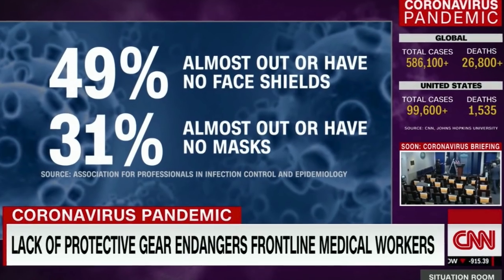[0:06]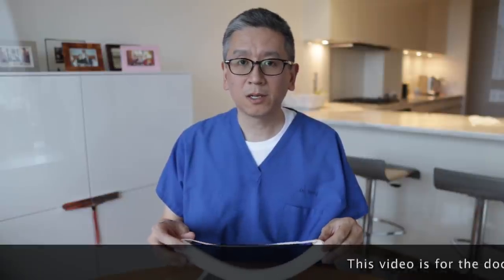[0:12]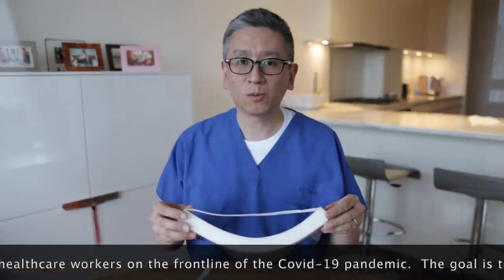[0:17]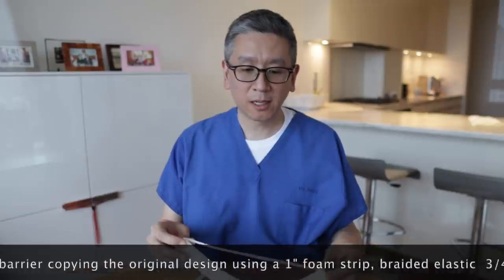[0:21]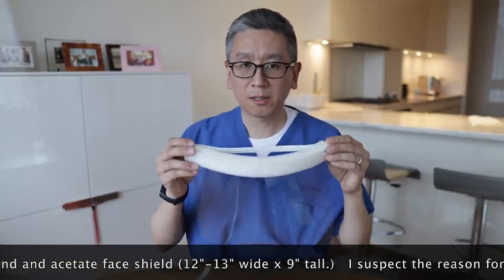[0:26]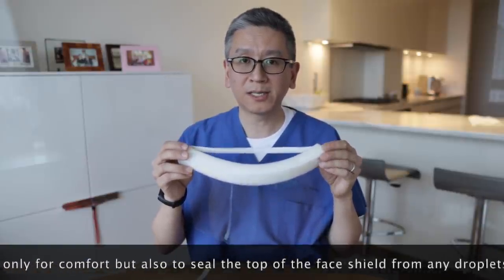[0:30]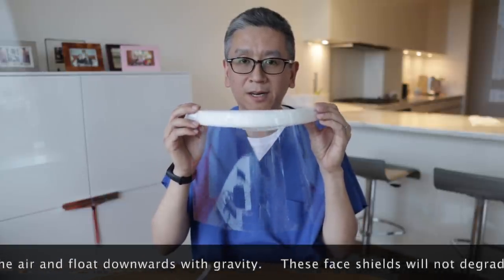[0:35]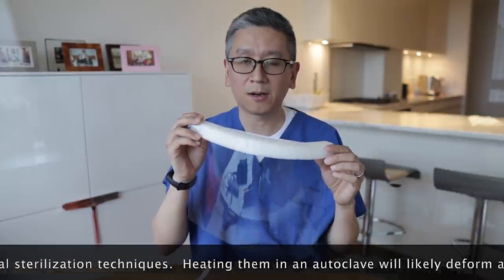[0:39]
This video is for healthcare professionals who are told that their hospital has run out of face shields and they're very worried for their own safety. So, what can you do? The goal is to empower yourself. If the hospital isn't buying the equipment, you can buy very simple materials from an arts and crafts store like Michael's and make this yourself.
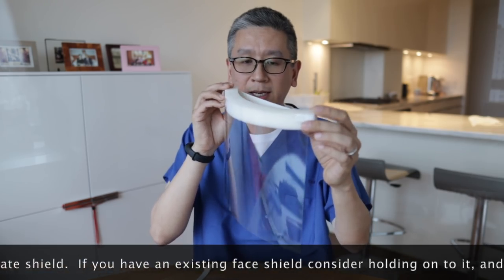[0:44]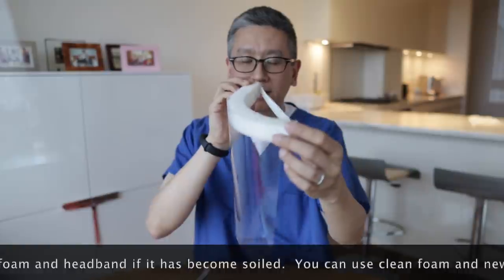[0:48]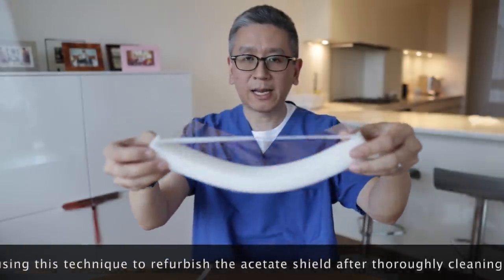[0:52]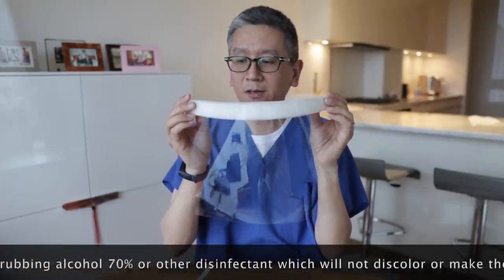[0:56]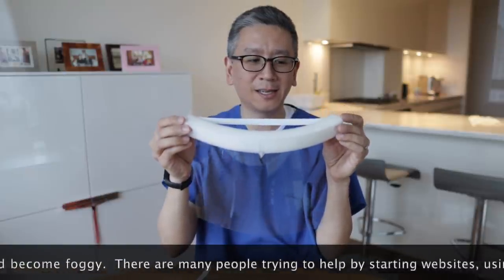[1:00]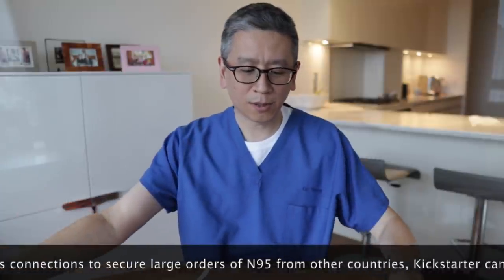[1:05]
Essentially, it is an acetate sheet 9x12, a one-inch foam cushion, and an elastic band. Everyone who's asking for them, you've worn them, you know that it's very easy to make. You look at it, you think, oh, I could make that. So, that's what we're going to do.
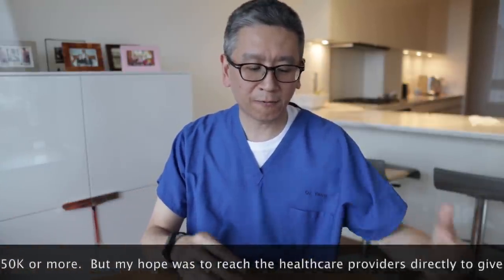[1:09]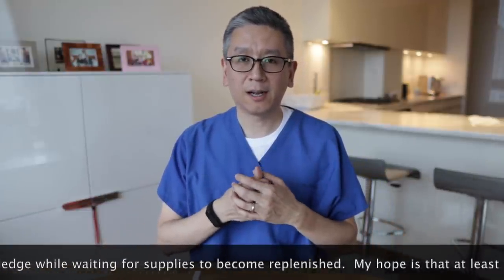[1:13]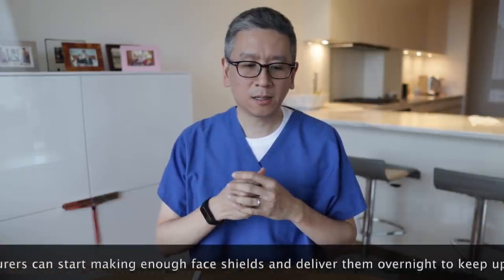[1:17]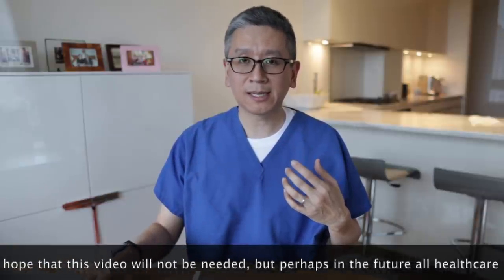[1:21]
So, if we're going to wait for the factories, you know, Ford, Toyota, Nike, to make them and deliver it, there's always a lead time. So, what can you do today, right now?
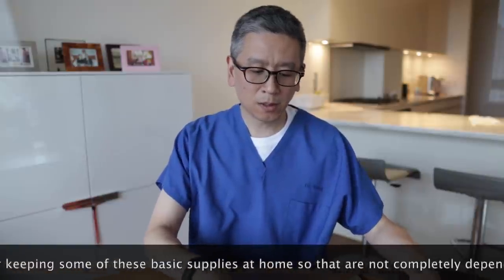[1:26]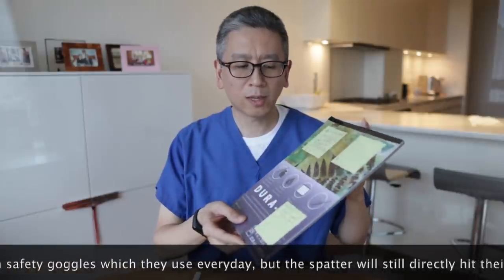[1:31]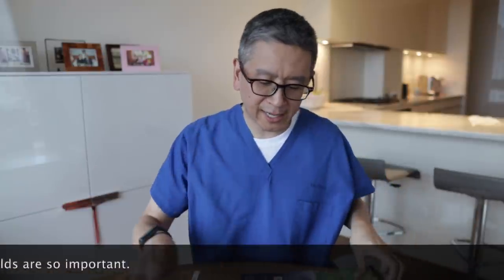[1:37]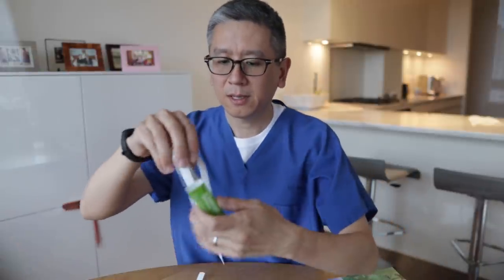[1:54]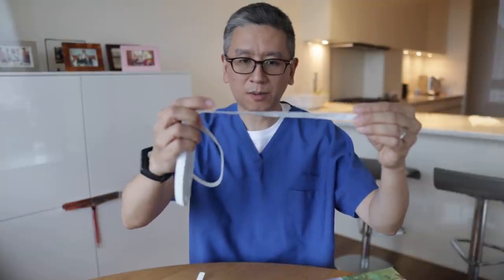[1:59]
So, the number one thing you'll need is the graphics acetate. This is called Duralar. This one comes in a pack of 25. I think it's less than $13. And that will make 25 shields. I have a roll of braided elastic, and you can make approximately 11 out of this one. This is four and a half yards long. Four yards will get you 10 elastic bands.
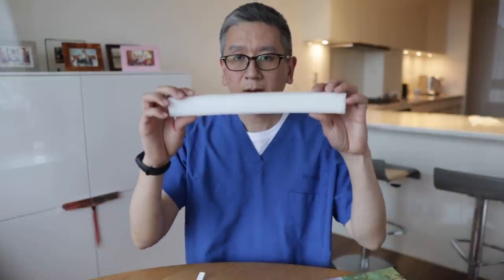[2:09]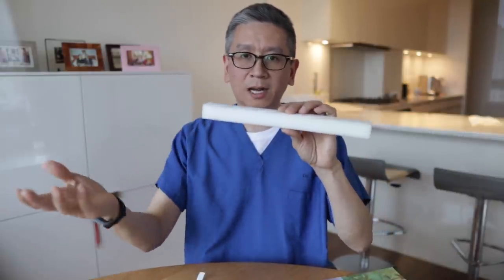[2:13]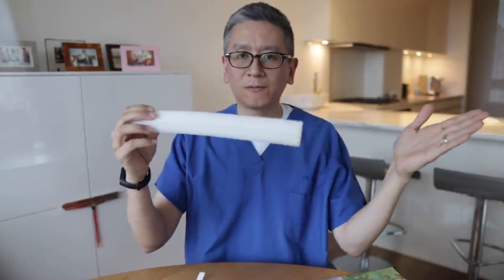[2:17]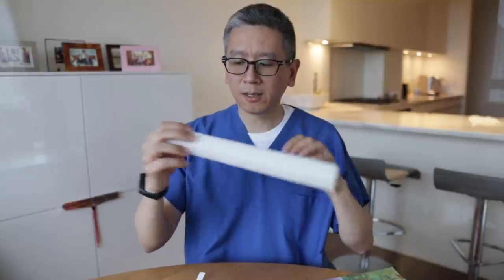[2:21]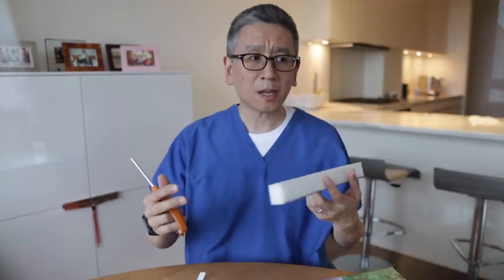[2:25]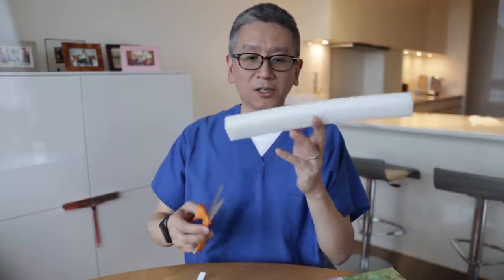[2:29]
Foam cushion. This is one inch thick. It comes in a giant roll at Michael's that is two feet wide by six feet long. If someone bought a giant roll of foam, I would just cut a strip. It may not look as pretty as this one, but it'll do. Okay. So, let's say it's cut.
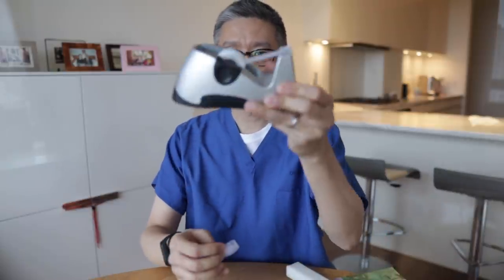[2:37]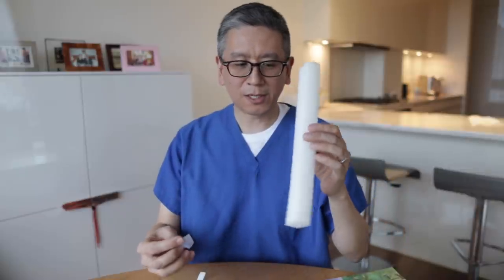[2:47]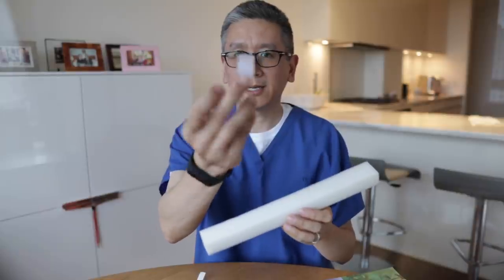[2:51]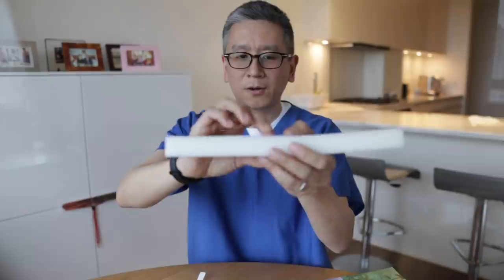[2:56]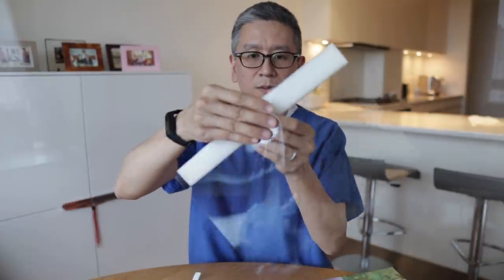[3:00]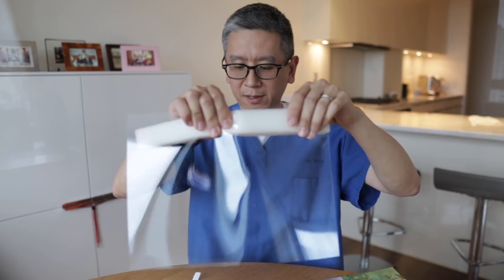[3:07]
Next, we're going to use plain scotch tape. Let's say you go to the nursing station, you grab a scotch tape, you're going to grab a stapler. You know, we're talking emergent or urgent situation. We're going to roll the tape onto itself. I'm sure you've done this before. Stick it onto the foam and just line it up to the top edge. Okay. We're essentially making an umbrella for our face. Okay. A splash shield.
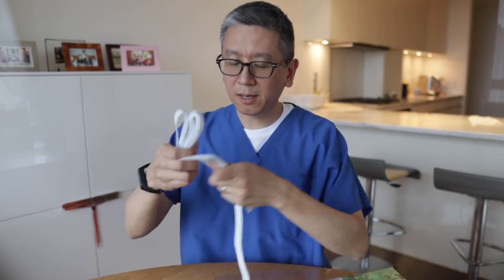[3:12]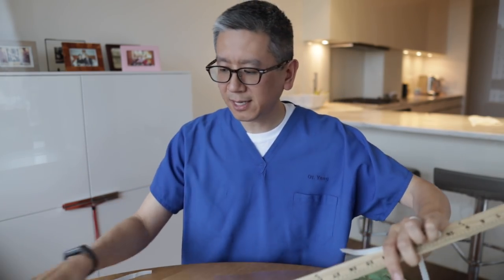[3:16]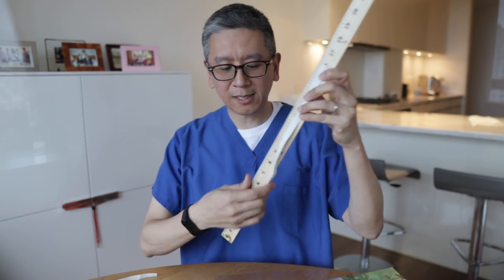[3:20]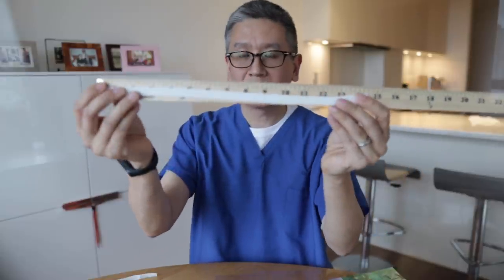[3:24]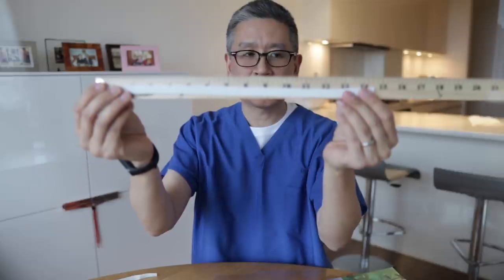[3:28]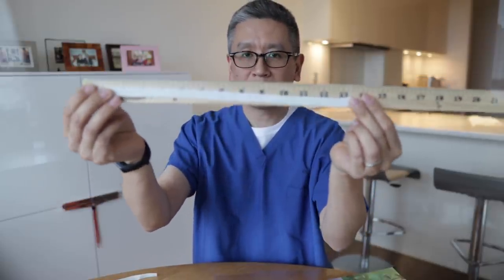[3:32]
Next, I'm going to pull out about 14 and a half inches of elastic and cut it. Again, these type of scissors at the nursing station. 14 and a half inches. That's approximately a large head. That's comfortable for me. A medium is probably 14 and a small is maybe 13 and a half.
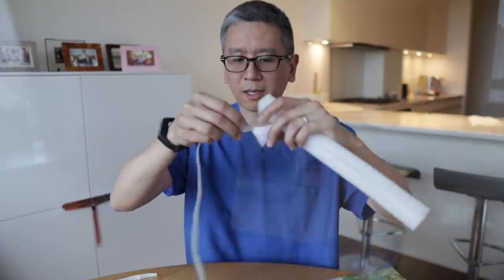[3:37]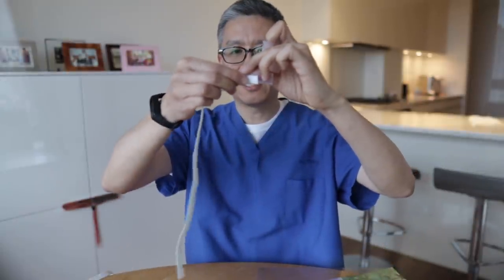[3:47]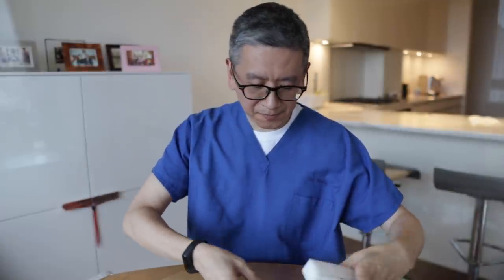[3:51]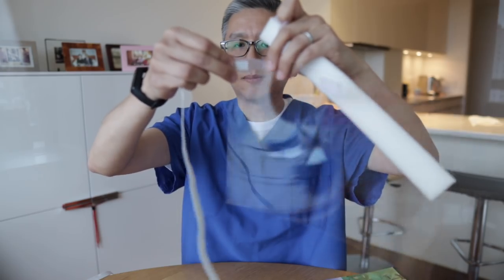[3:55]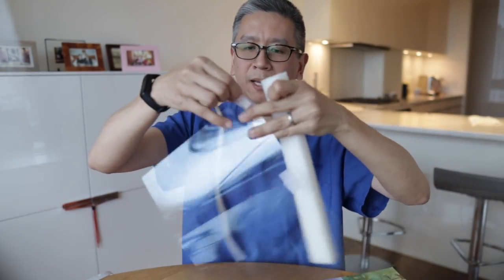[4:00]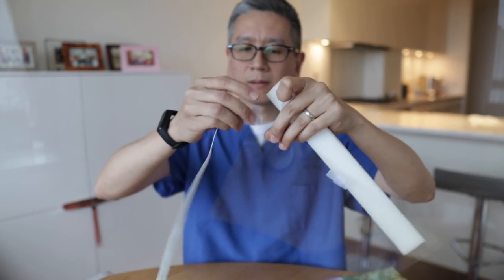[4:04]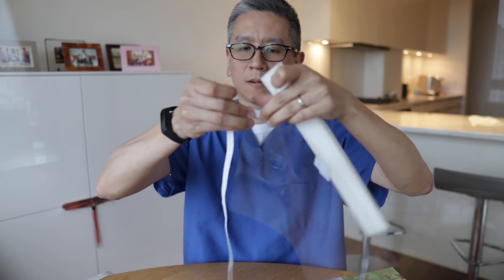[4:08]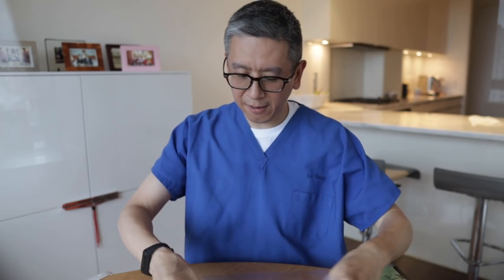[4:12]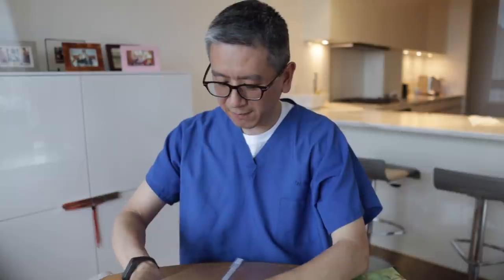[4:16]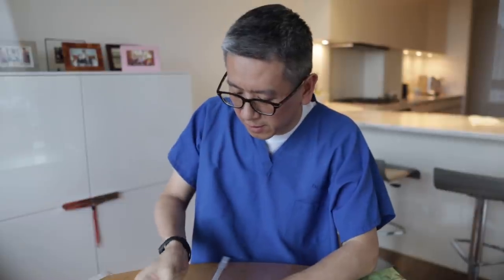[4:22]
Next, we're going to line this up right here. What I'm going to do to make it easier, I found that the stapling is a little bit tricky. So to make it a little bit easier so you're not fumbling, you're going to tape that on the front edge and then just line it up and tape it. We're going to staple it so it's more secure, but this is just to make the stapling a little bit easier. Okay. You're going to tape that on. Let's say if you can't find a stapler, this might have to do. Okay. But the stapler is much more secure.
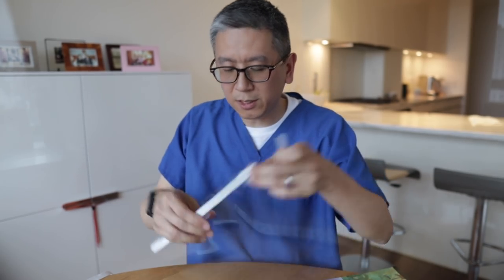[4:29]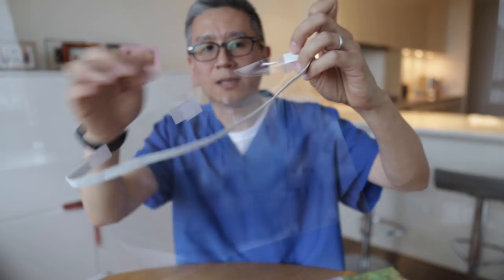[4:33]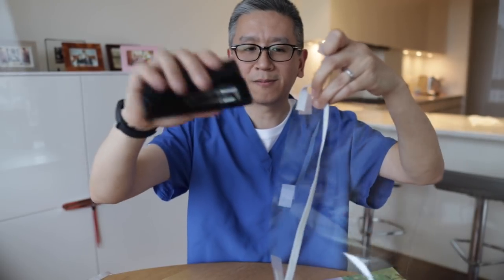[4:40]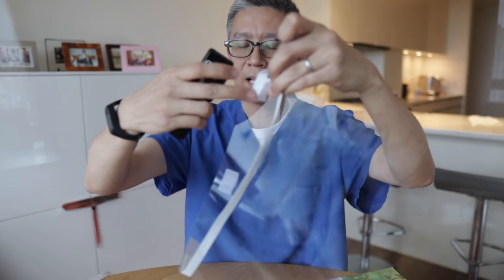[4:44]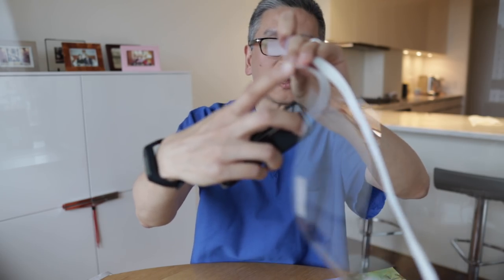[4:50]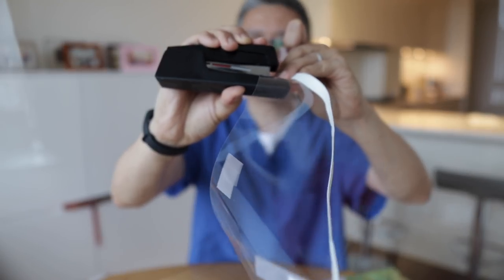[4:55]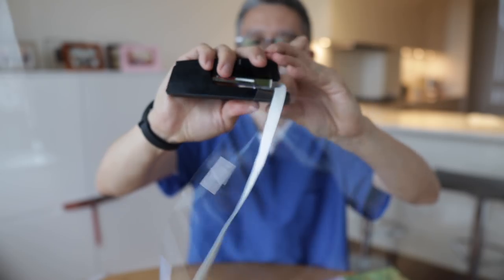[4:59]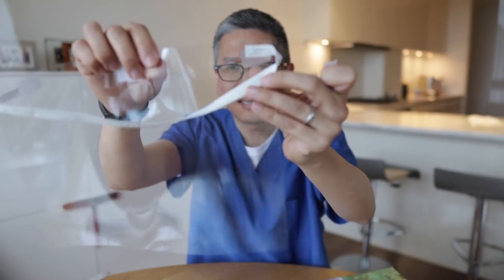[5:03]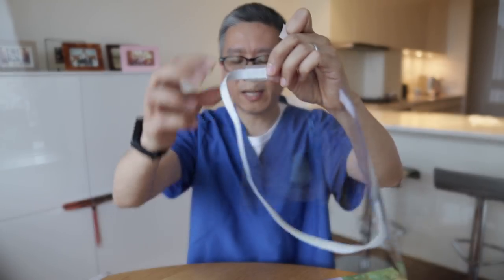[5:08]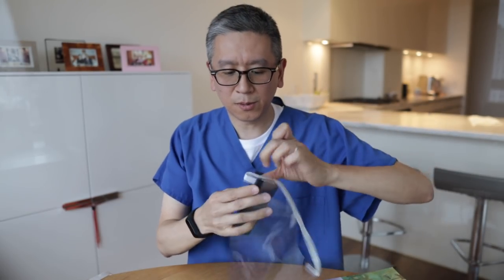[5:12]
So we're just going to place the tape here. I'm actually pulling off the foam so I can show you guys. So I've taped the elastic on the edge and that's really just so you can line up the staple. Actually, I'm going to use the stapler. You recognize this. So the staple is going to go on the outside of the shield and then the elastic is on the bottom and the acetate is on top. I'm going to put two staples. So hopefully you can see there's two staples here. The tape holds it in place while you line it up, otherwise it's a little bit tricky to staple. I'll just line it up.
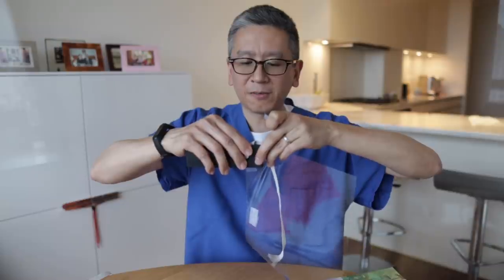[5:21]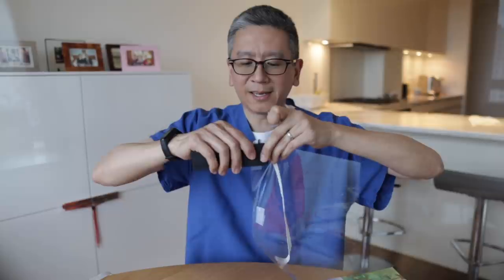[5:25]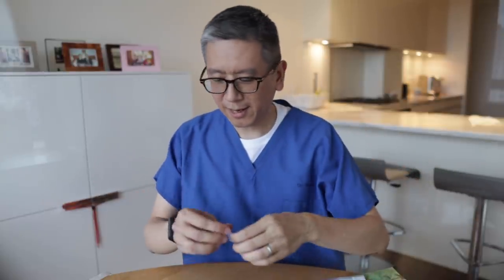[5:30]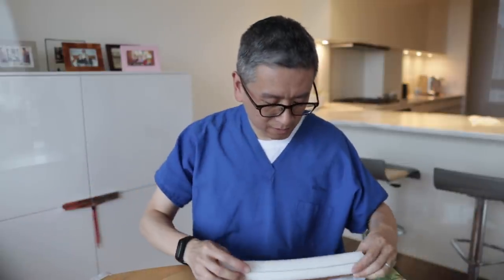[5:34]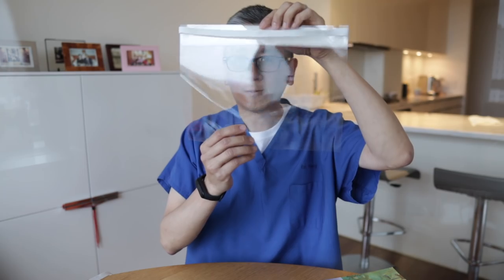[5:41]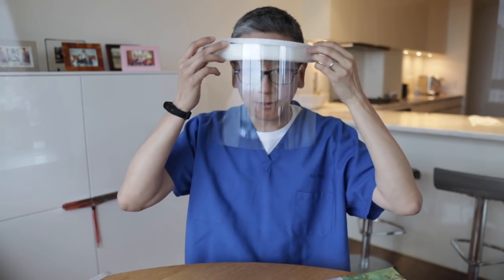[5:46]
I see they're doing 3D printed masks. If you've ever seen a 3D printer churn out its design, it can take literally like 10 minutes up to half an hour to print out whatever it's printing. They also are using laser cutters to cut these shields. But if it's a rectangle, you don't need anything special. Literally, you can use a pair of scissors and then you're done and you can start taking care of patients.
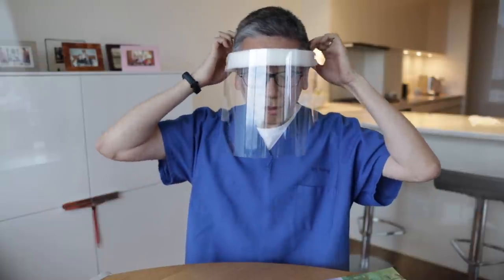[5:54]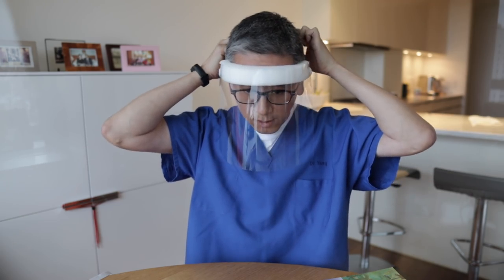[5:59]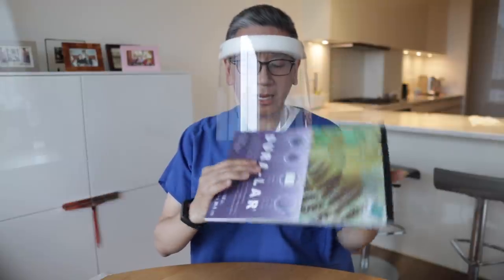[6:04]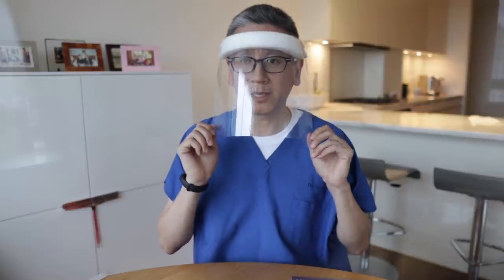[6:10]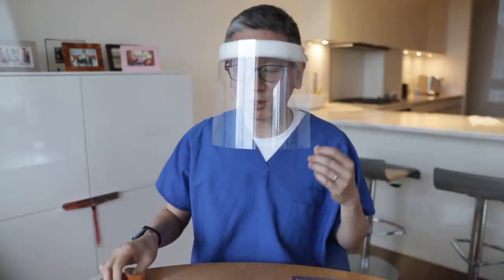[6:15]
On your next shift, you can make a fresh one and discard it depending on how confident you are about buying these supplies from your local shops. But other little details is you can maybe round off the edges with your scissors so it looks more like the standard shield. When you're seeing patients with this shield, it looks pretty much like what you normally have. So they may not notice that it isn't the standard shield. And it'll protect your face from getting any mucus or body fluid or blood.
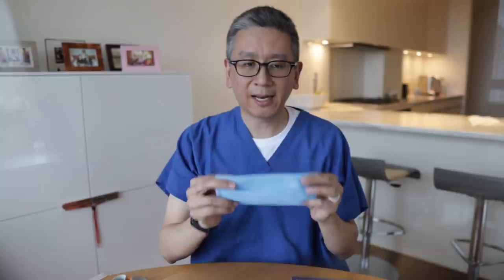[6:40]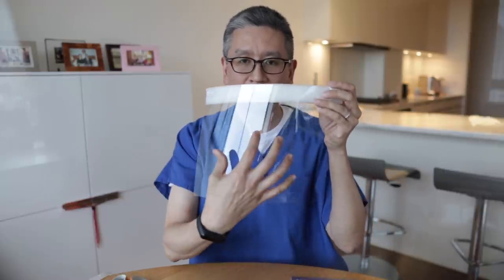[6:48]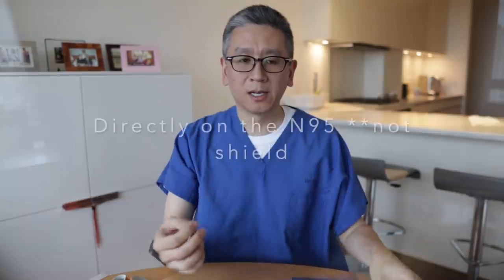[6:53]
The other reason for making it is if you have, let's say, an N95 mask. The two reasons why the masks become unusable is a direct spatter of blood or sputum or mucus directly on the shield and it's visibly contaminated. That you should throw out. The other reason is over time the filtration ability of the mask gets clogged with maybe microscopic or visible droplets which you can't see but contains a little bit of mucus. Then over time it starts clogging the filter material of the N95 and it makes it very, very difficult for the user to breathe.
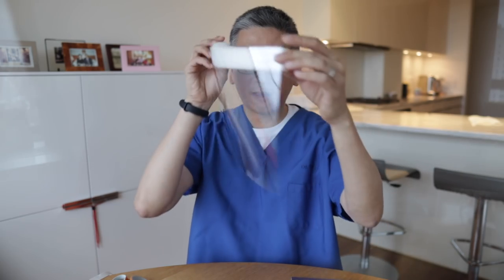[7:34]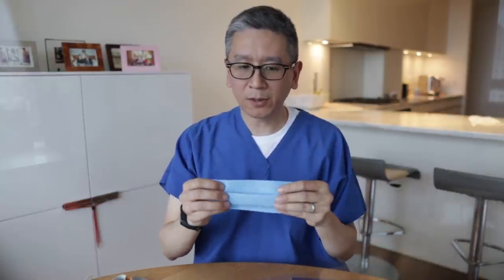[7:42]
And that would also be a reason for, you know, it's filtering well yet you can't breathe and therefore you can't use it. Having a physical barrier like an umbrella will at least block that initial splash. At our hospital the other thing they're doing is recommending that they use a procedural mask on top of their N95 in order to preserve the N95 so it can last longer.
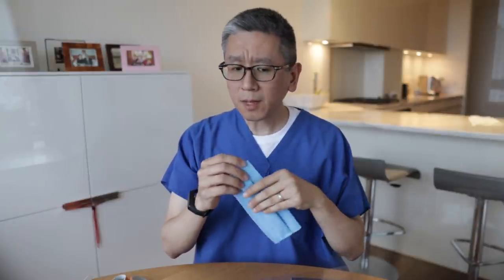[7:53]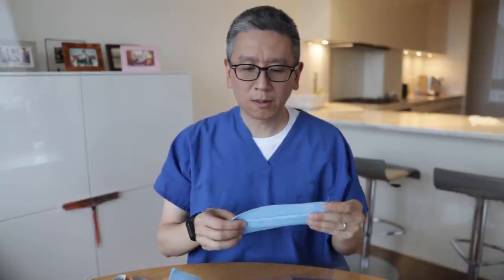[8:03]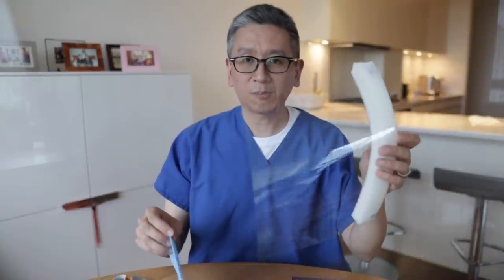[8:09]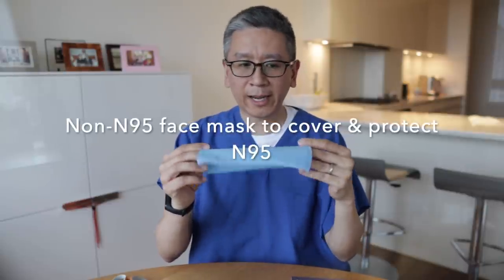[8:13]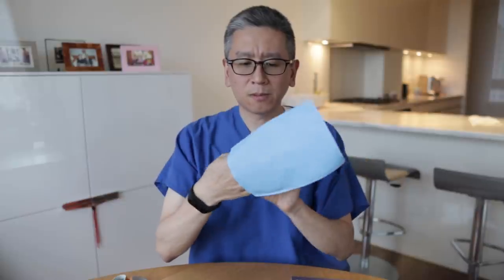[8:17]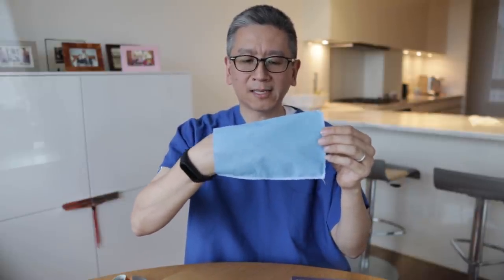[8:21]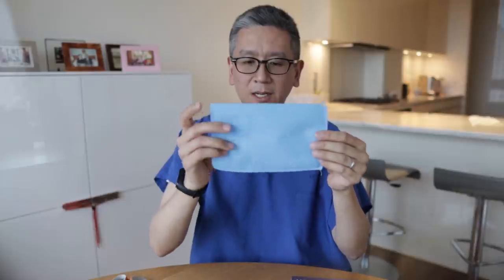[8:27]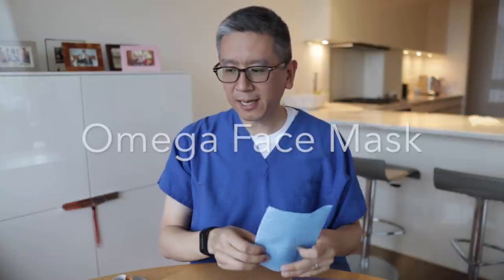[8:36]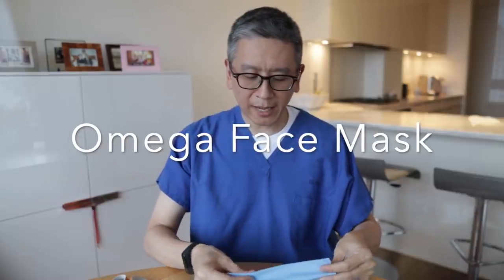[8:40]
So one other thing I wanted to show, this is a way to make a procedural mask and maybe even save some of the other ones. So this is really, instead of a splash shield or a face shield, this is your N95 shield. What I have here is a cold pack sleeve. At our office we place a cold pack in and we give it to the patient. What I did is I modified this to become a makeshift face mask and I call this design the Omega face shield or the Omega face mask.
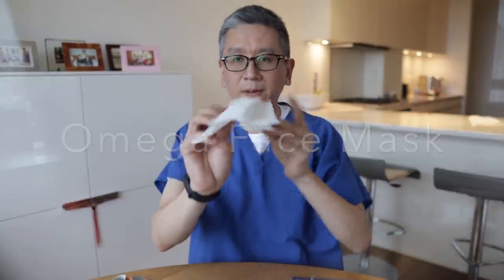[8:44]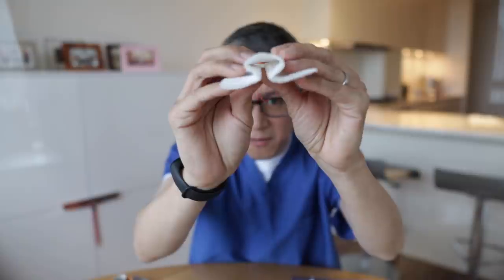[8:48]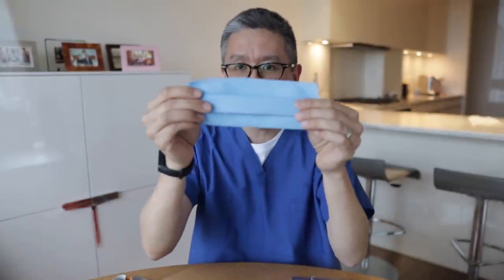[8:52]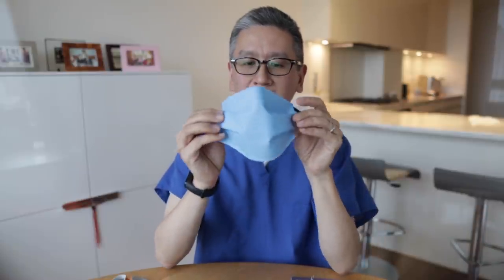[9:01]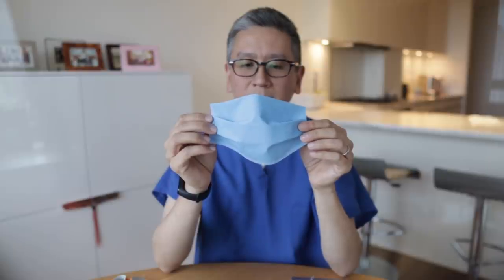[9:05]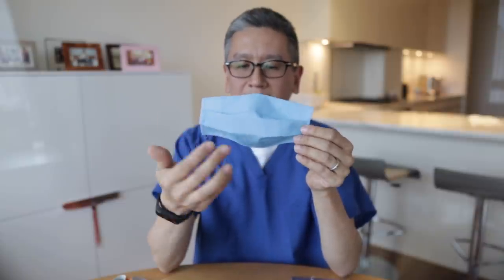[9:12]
The reason is when it is folded up, if you look at it right here, it forms the Omega sign. Okay, and the way it looks is like this and then when you put it on, it covers the N95 mask. This is used in surgery as a drape material. In this case, this is a cold pack cover and it is waterproof.
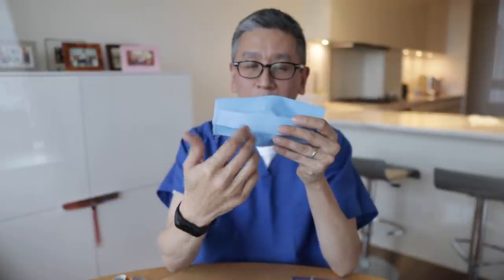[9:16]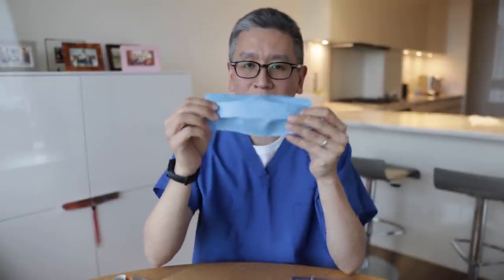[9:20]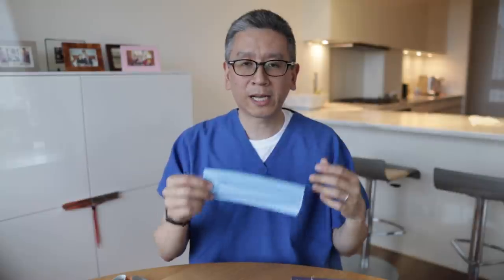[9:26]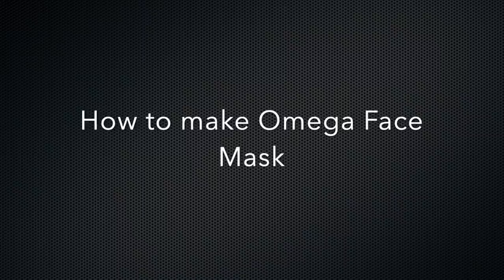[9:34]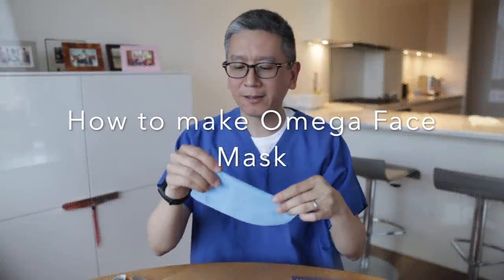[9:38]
So this way, it doesn't soak through like a paper towel and literally, if you have enough of these, you can discard them maybe between patients or, you have a morning shift, you throw this one out because it's not even a real mask and then make a second one for the afternoon. So now we're going to make the Omega face mask.
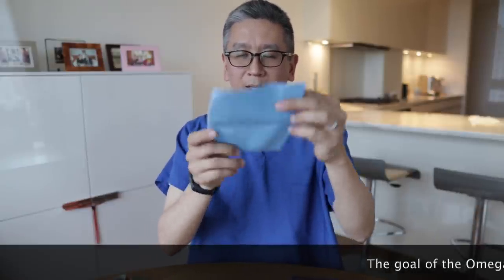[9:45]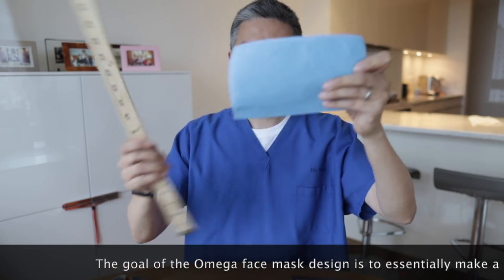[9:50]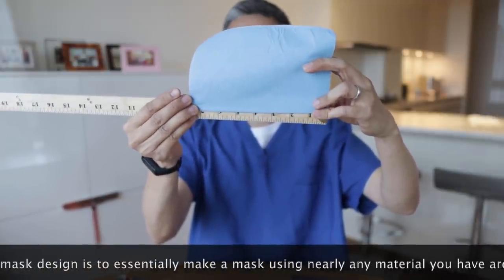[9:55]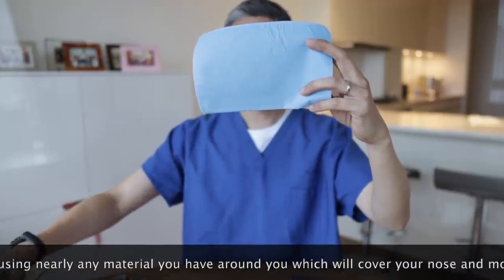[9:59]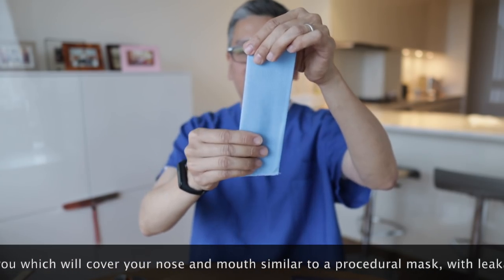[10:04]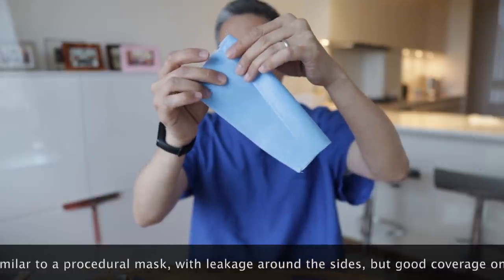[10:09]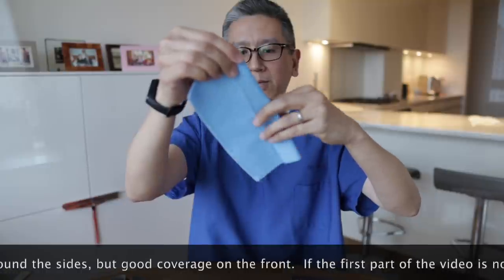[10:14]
So the way that I designed it, I'm going to give you a measurement. This is approximately seven and a half inches long and about five inches wide. To make it, you're going to fold it in half lightly and then from the fold, you're going to fold the front half to meet the middle, that slight middle fold, and then a second fold right here.
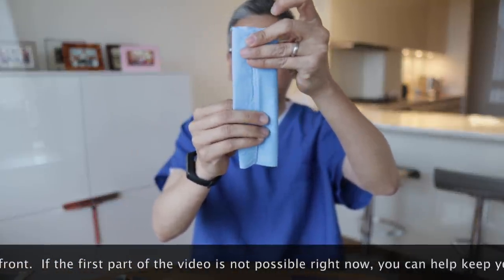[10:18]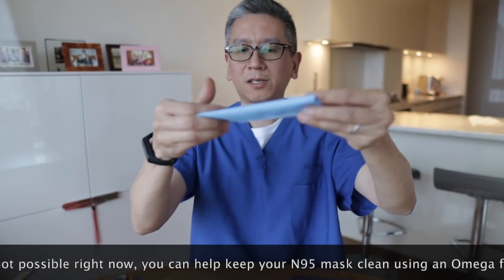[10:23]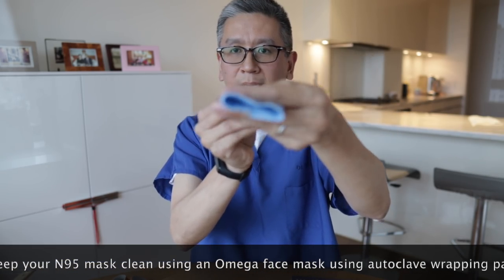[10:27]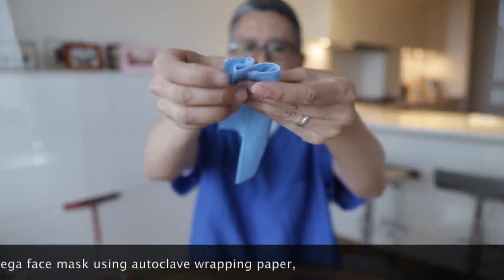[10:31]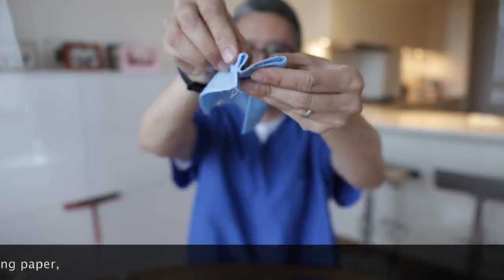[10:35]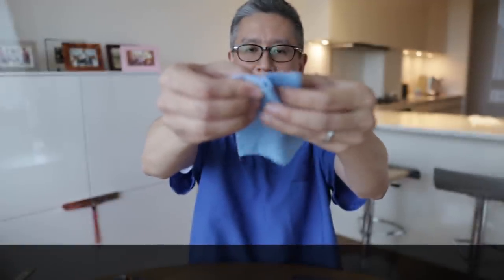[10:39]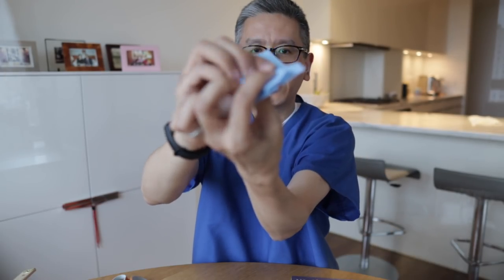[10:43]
So this is the Omega face mask. Once you do that, this is the shape. You're going to then fold this over to meet the middle. So you're going to take this, then fold it over and then take this other side and fold it over. And this kind of gives that Omega shape.
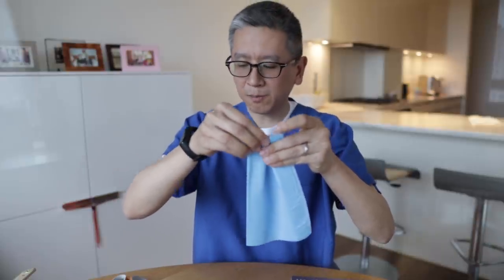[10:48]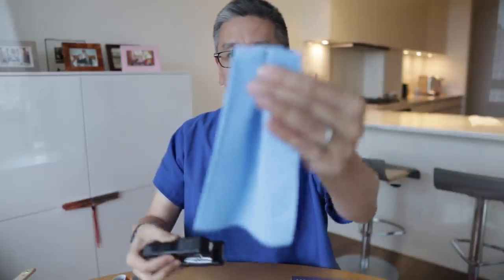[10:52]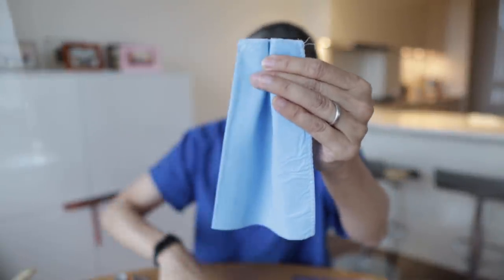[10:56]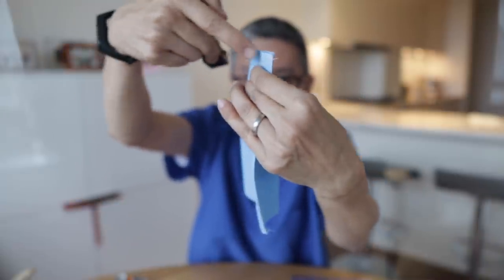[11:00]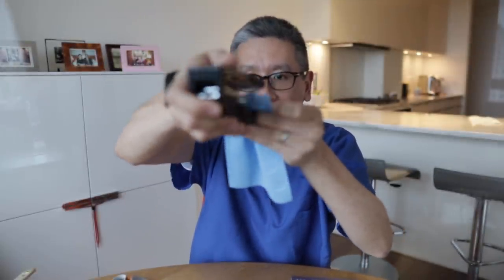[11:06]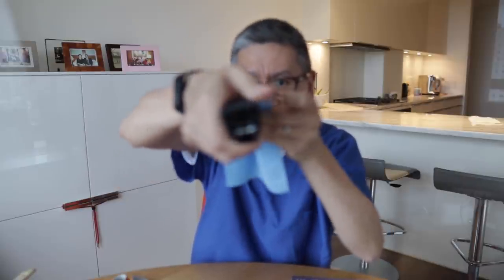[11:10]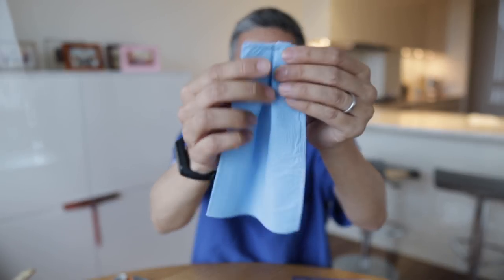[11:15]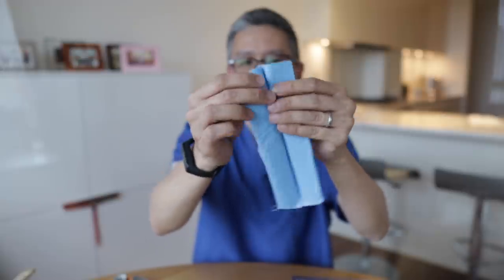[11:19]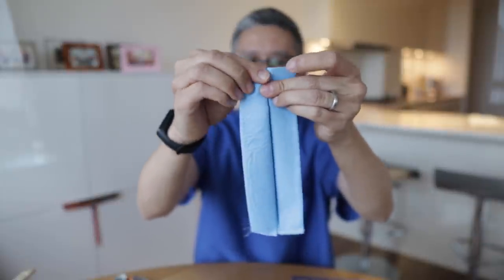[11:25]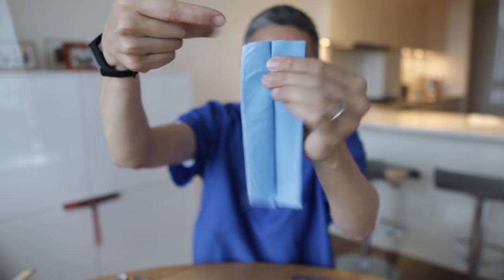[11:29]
Next, we're going to use a simple staple again, using stationery supplies, right where I'm going to block my face, right where the seam is. We're going to place a staple from front where the seam is to back. You want the sharp side of the staple facing the outside of your mask, so you don't get scratched by the staple. So I just placed the staple right here. I'm going to finish the Omega fold right down the other side. Like this. We're going to staple the open end with the staples coming in this way to the open end.
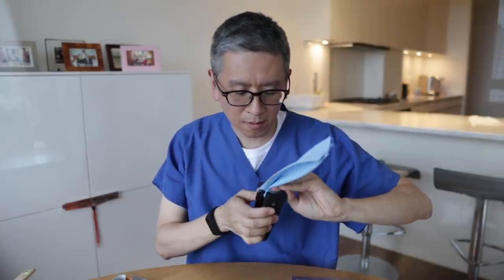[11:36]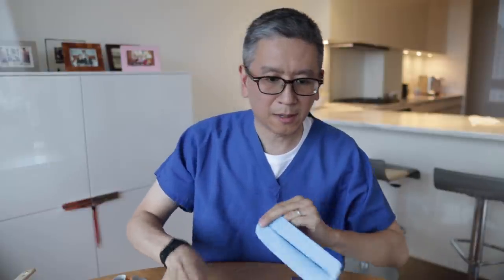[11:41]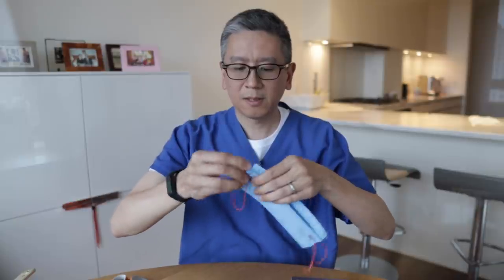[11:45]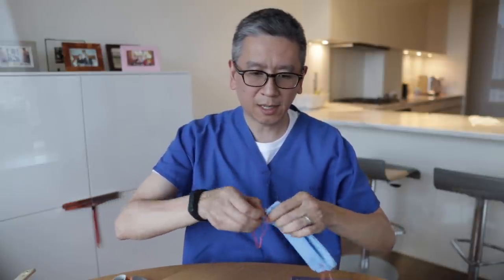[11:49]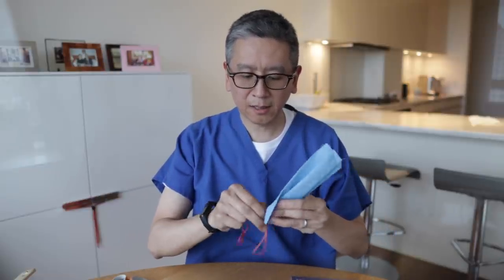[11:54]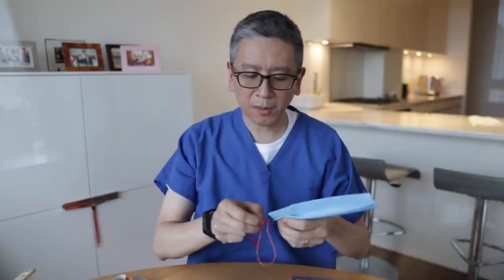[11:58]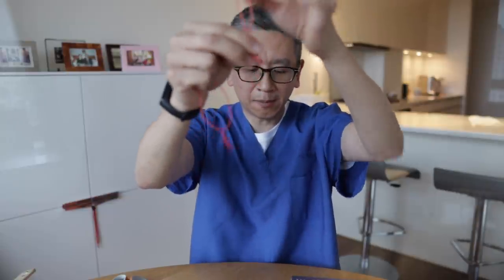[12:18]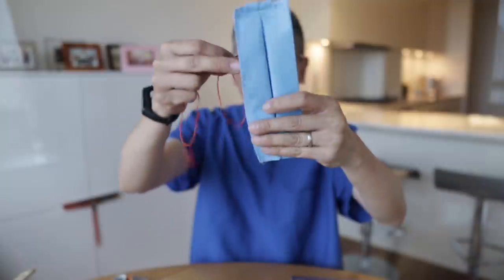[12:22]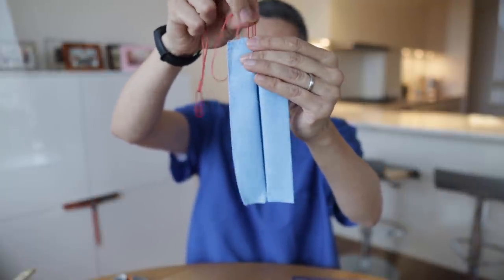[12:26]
So next, what you'll need is paper clips and a stationery rubber band or some kind of rubber band. These are the big loop kind that sometimes they'll wrap eight and a half by 11 documents in folders. So these are pretty common for the secretaries. If it's any smaller, you can't really wrap a stack of documents. A standard paper clip. And then here we go. So we have our Omega shield. We're going to place the paper clip and this is just to cover the N95. It's literally an N95 shield.
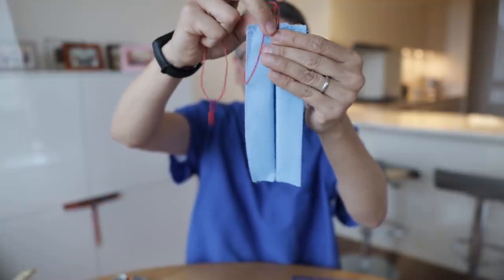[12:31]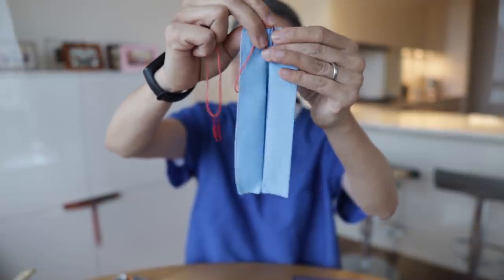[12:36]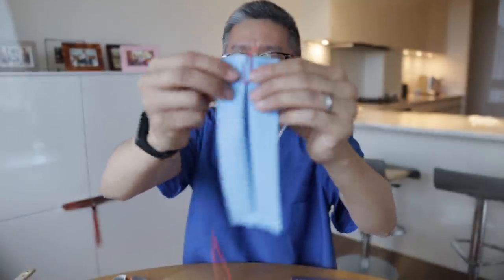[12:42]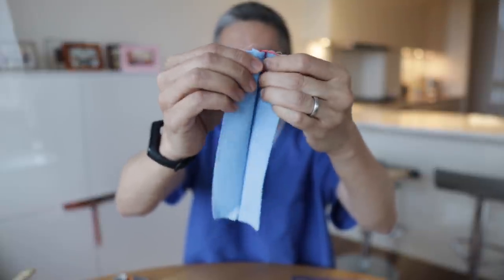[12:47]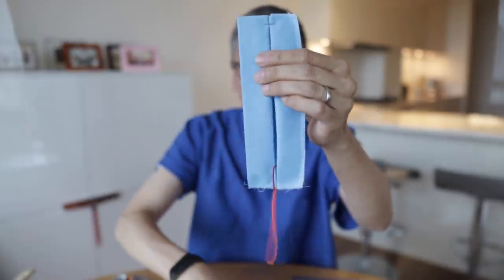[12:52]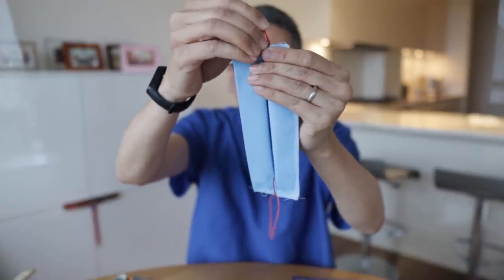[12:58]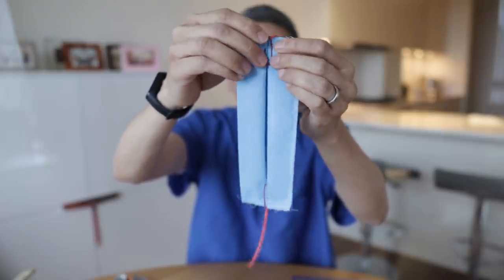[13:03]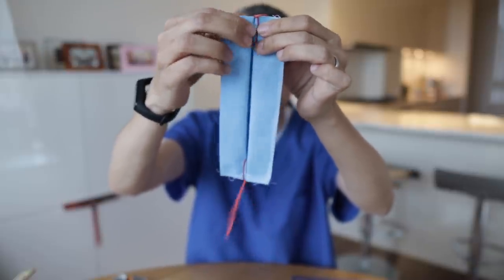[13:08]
So that on top, underneath the face shield, we're going to slide this down. You're going to slide the paper clip down. Notice the edge of the big loop here is on top. To make it more secure, you're going to pull this flap and then tuck it. So you only see half of it. Same thing on this side. We're going to slide this over the top. And then push it down. You'll see the big loop. We're going to pull one side of the flap, tuck it underneath. You only see half of it.
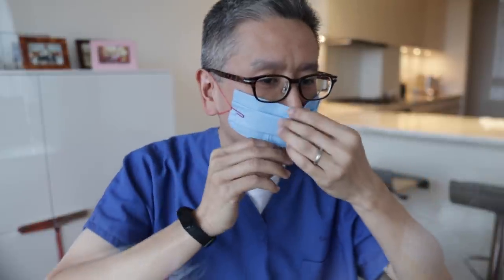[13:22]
We're almost done. I'm going to pull this up a little closer so you can see me. I'll sit a little closer. Just pull the Omega shield over your ears like this. Loop it on. You'll be wearing your N95 already and just pull it up like this. It creates a little tent in the center.
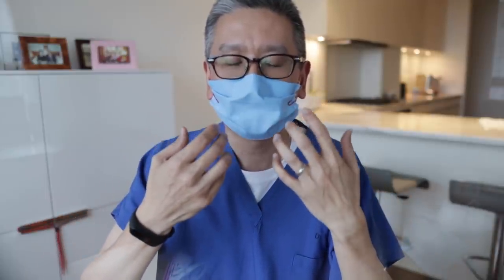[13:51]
There's some leakage, but the main thing is we're using this as another shield with your face shield. Then you have a secondary shield. If there's an aerosol, most of it hits the shield, which you can wipe off. Let's say some venturi effect comes around the shield. You have a second shield to catch any light droplets.
And then because it's so simple to make, you can discard them more frequently.
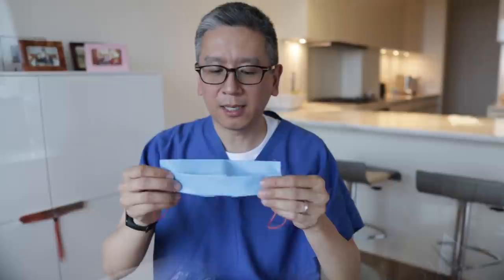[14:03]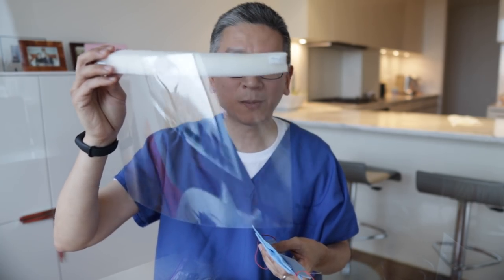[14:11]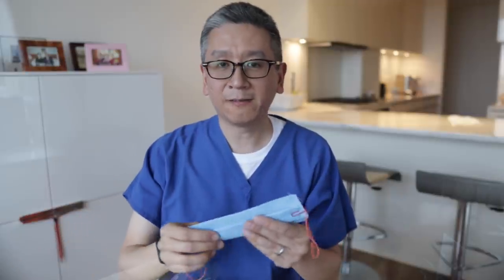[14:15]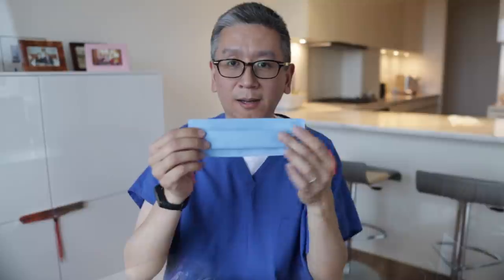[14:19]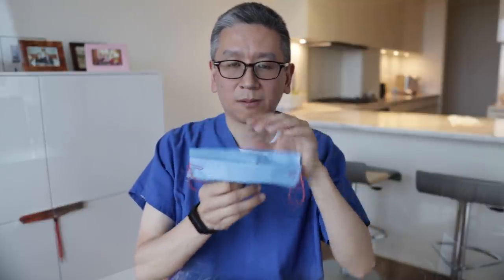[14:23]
Or in another situation, let's say there's no acetate shields in the meantime. You're going to have to wait until an overnight delivery for the next day, but they only gave you one N95 mask for the day or week. Then how are you going to protect that shield? So potentially you can put on your N95, place the second one on top,
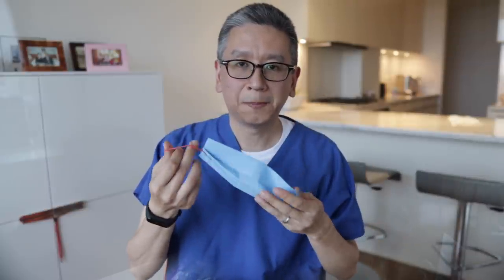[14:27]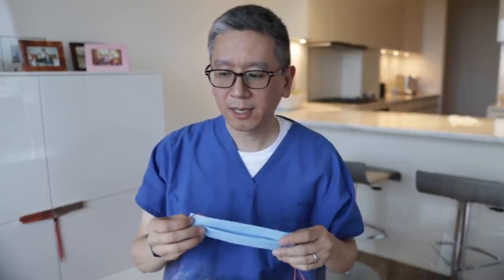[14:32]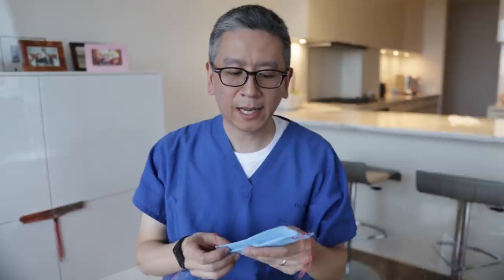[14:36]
and just keep it as clean as you can. So I think that's all I have to say for the frontline healthcare workers.
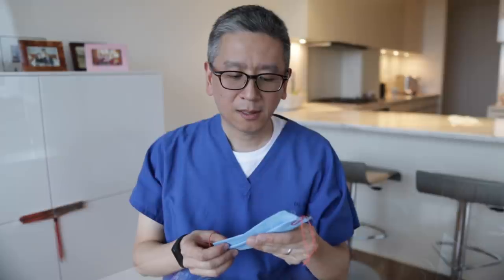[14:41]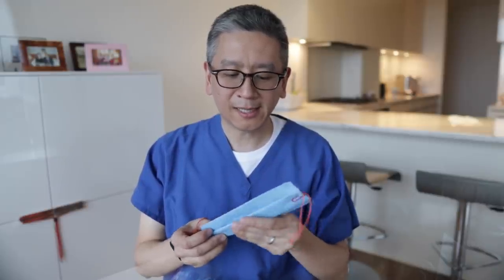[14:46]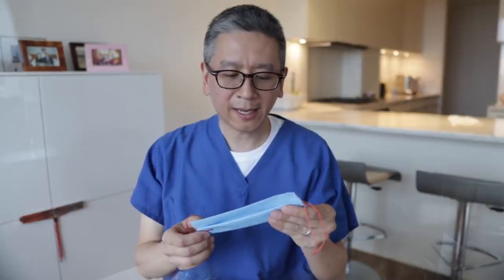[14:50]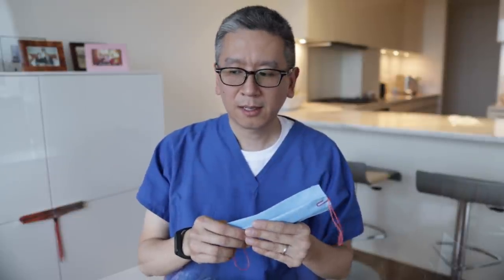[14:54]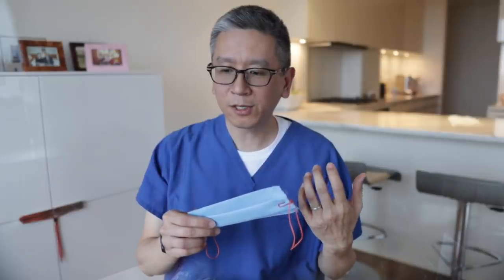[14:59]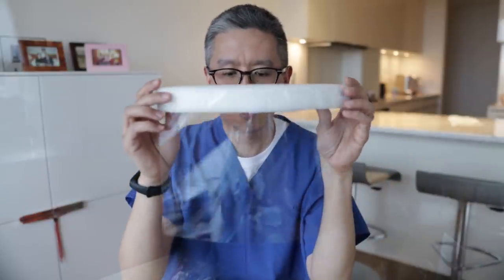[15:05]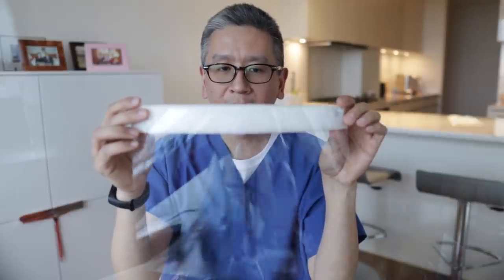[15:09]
I'm doing everything I can, you know, just looking at the general problem and looking for whatever solutions I can do as quickly as I can. So far with these face shields, the first batch I made 48 out of a roll of 40 inch acetate that was, I think, 12 feet long. 48 of them.
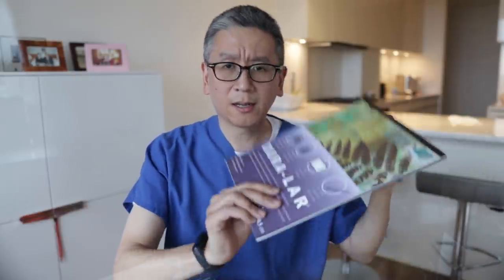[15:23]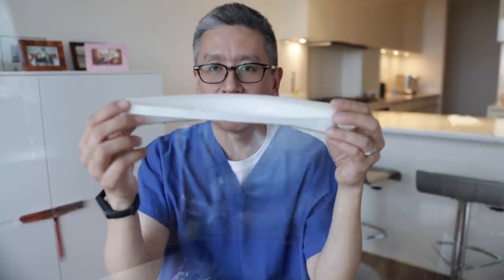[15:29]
Then I made another 66 using these, and then I ran out of foam. So I just, I had two more for demonstration purposes.
And I've been working on the Omega mask.
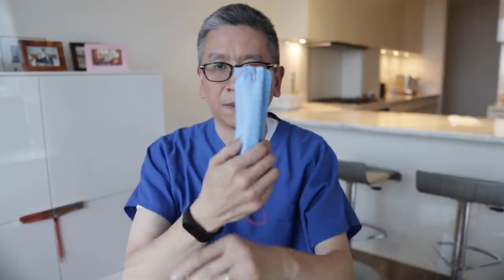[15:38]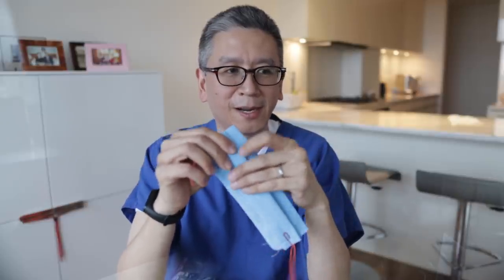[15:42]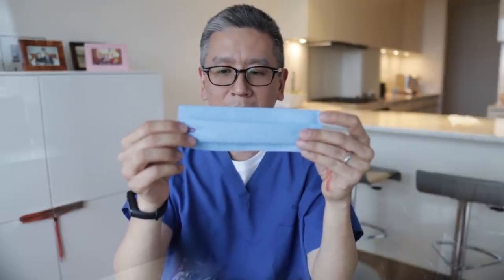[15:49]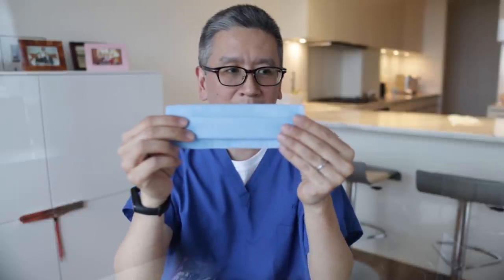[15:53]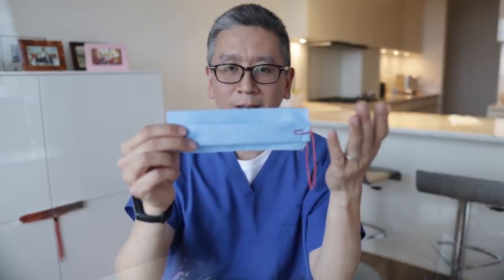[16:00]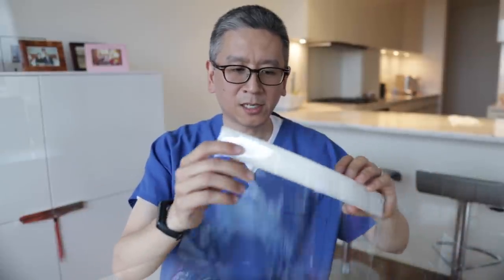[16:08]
This is kind of a MacGyver type thing, but you know, I'm just imagining if I'm in your situation, I'm at the hospital already and they literally tell you, sorry, we don't have PPE for you or one particular piece. I think the face shield is actually really important.
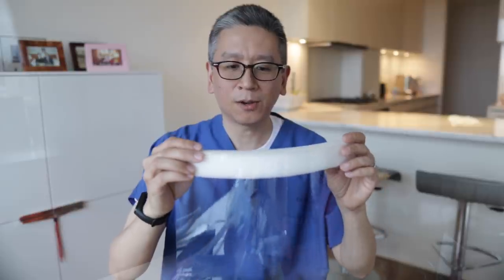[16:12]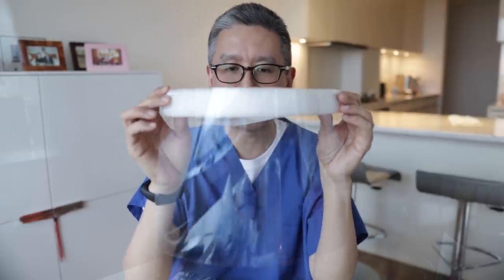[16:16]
And N95, you can't make, so all we can do is conserve. But you know, if we can make that N95 last longer just with an umbrella on top of it,
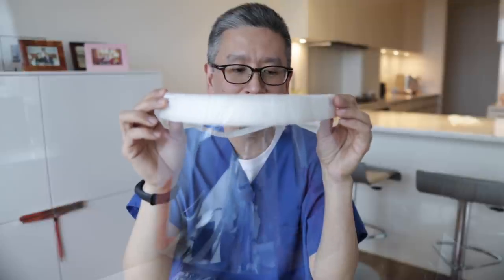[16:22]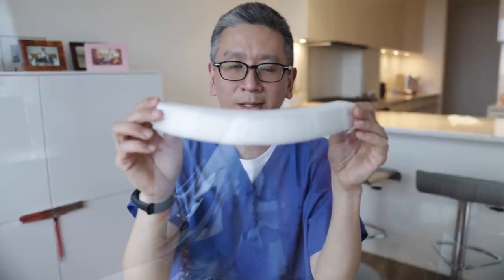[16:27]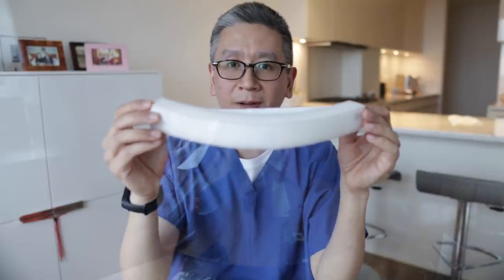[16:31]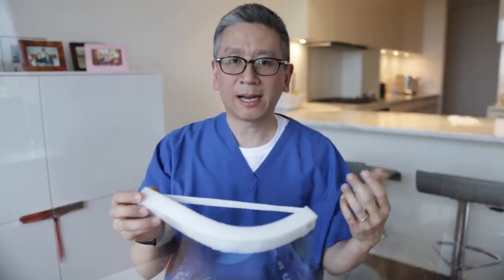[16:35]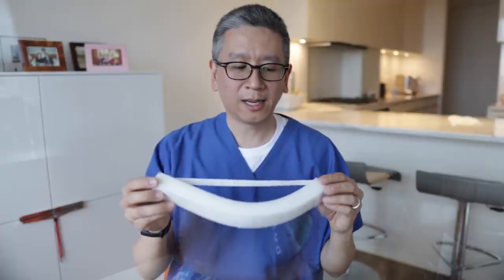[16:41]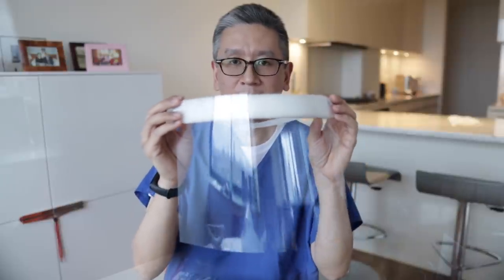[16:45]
this is low tech. If you don't have time to make it or your Michaels or your art supply store is not available, maybe you can ask your family member in a state where maybe it's not locked down yet or they can deliver it and they can make it at home while they're just sheltering in and then send it as quickly as possible. But as you can see, this is relatively easy.
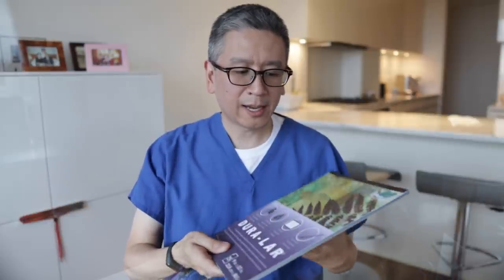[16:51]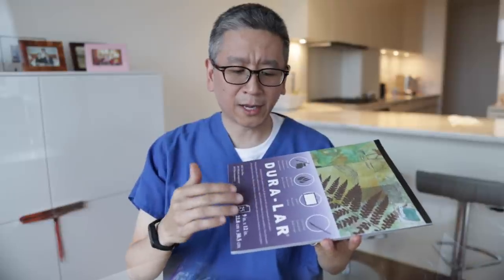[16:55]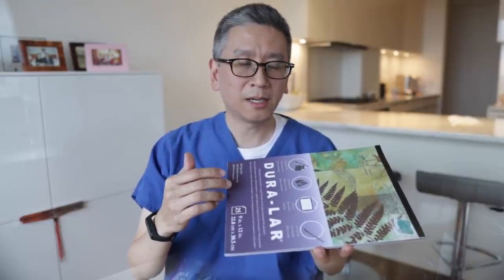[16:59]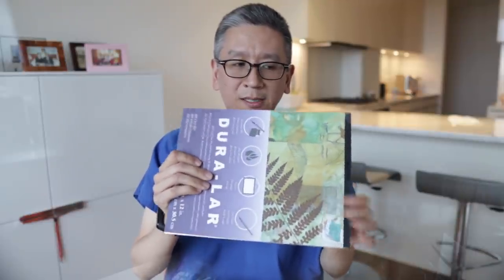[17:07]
The other thing I was thinking of, sorry to make this so long, the idea of making your own shields actually came from a news article maybe two and a half weeks ago from Seattle, where the hospital staff themselves were using vinyl sheets, foam and elastic.
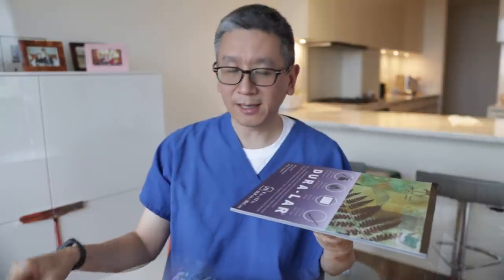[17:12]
It wasn't even braided elastic. It looked like just elastic cords and fashioning it. And they're talking about their desperation, and that was literally almost two weeks ago, they were already doing this.
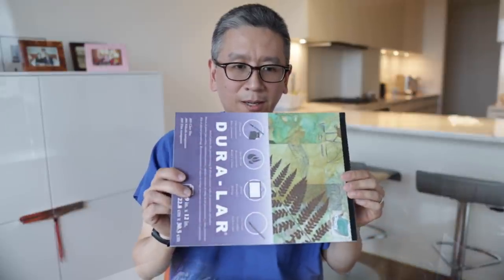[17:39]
That inspired me to try to do something, and just use something where, when the supply chain is completely overwhelmed and everyone is drowning and everyone is grabbing for the same stuff and just sitting there and waiting, you have to look for another solution. You have to think outside the box and think, okay, you have a face shield. What are the things that people are not looking for?
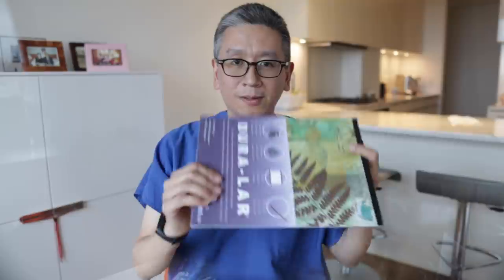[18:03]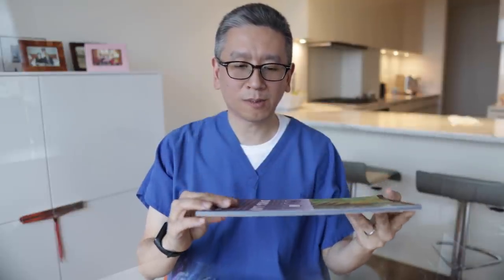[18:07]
So this may start becoming in more short supply once we start doing this. In other countries where they don't even have art supplies like this, they're using two liter Coke bottles, cutting off the bottom and then opening it up and just using that square piece in the middle as a face shield.